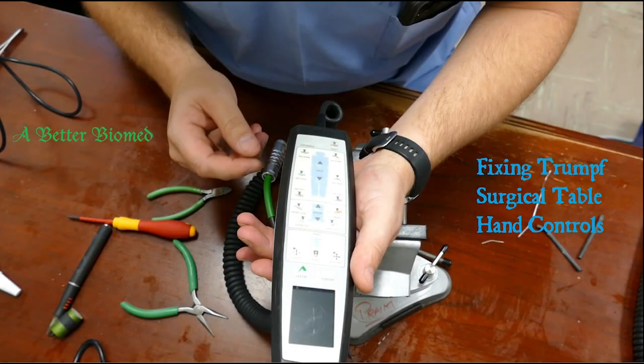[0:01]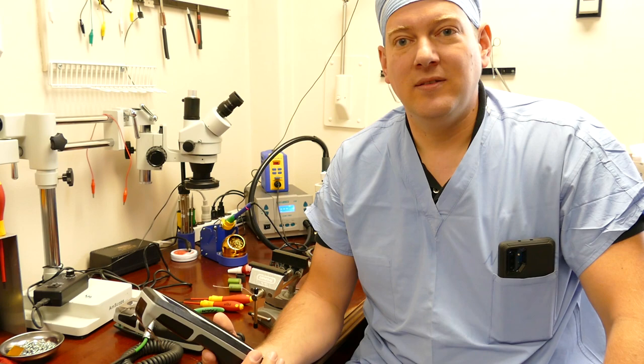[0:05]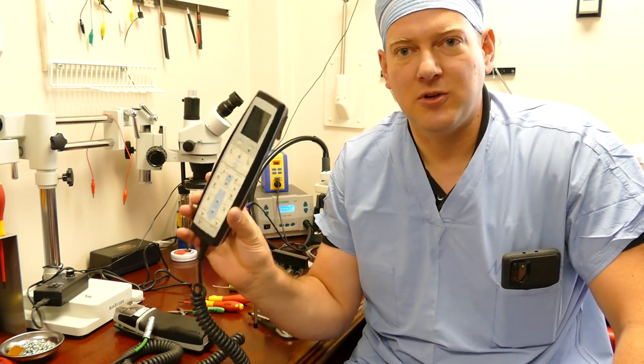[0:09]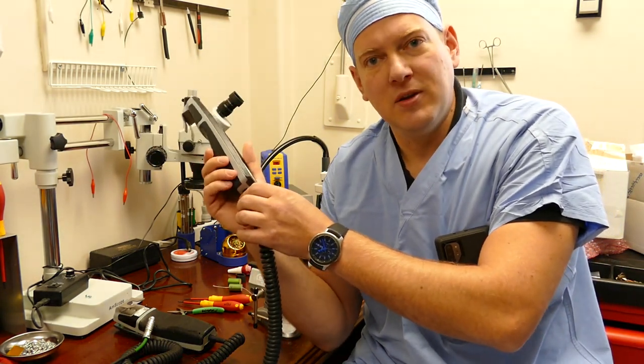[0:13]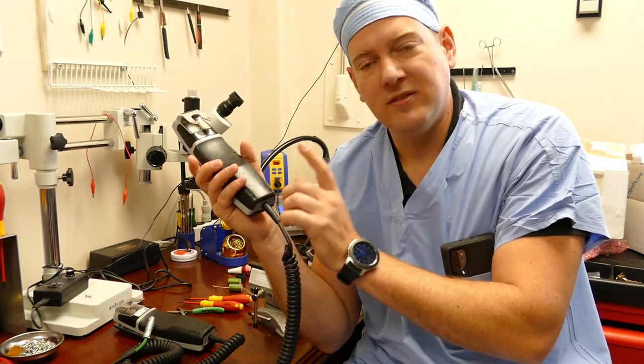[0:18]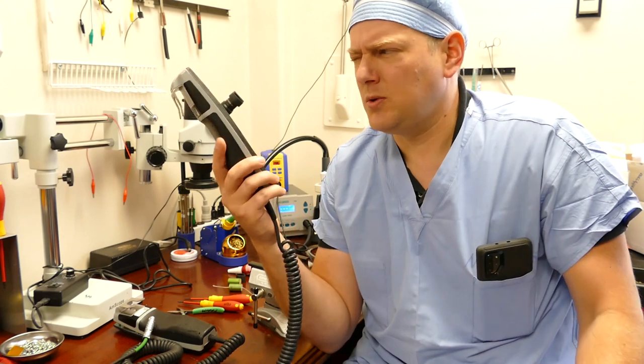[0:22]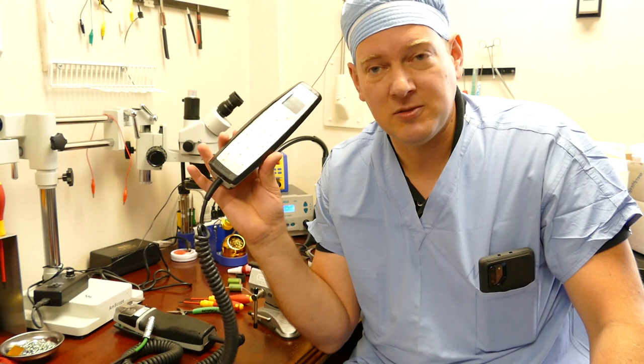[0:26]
Hi everyone, welcome back. Today I'd like to go over the repair of Trumpf hand pendant surgical table controls. The common problem with these controls is the cable down here at the bottom becomes loose and the cord will spin around, and that breaks some of the connections on the inside. It's a simple repair, and these hand controls, I believe, are just over $2,000 if you want to buy a replacement. So instead, we're going to repair them.
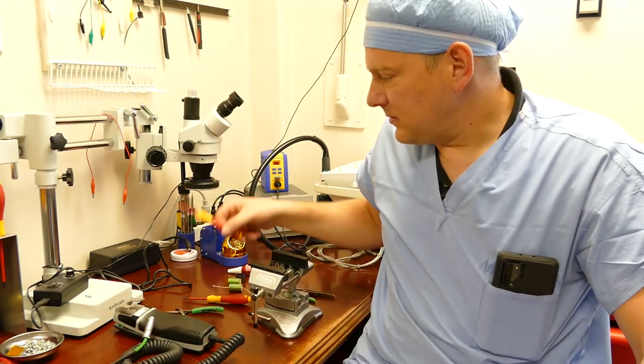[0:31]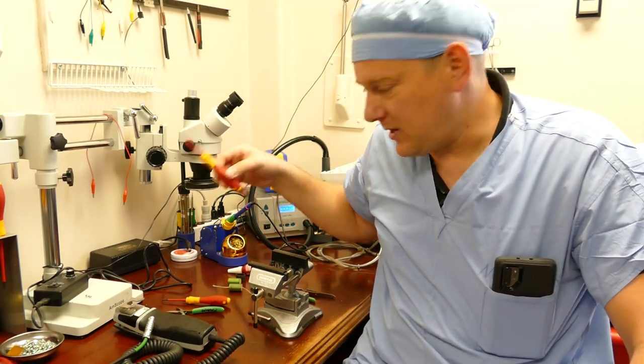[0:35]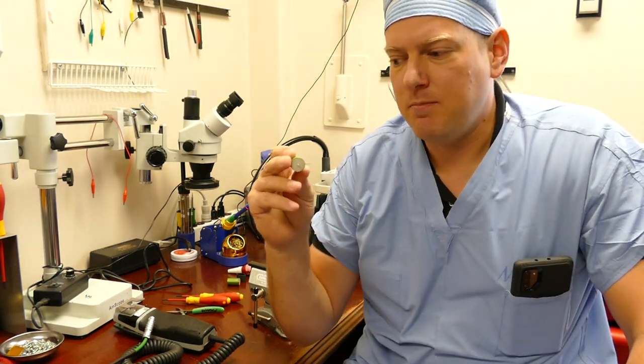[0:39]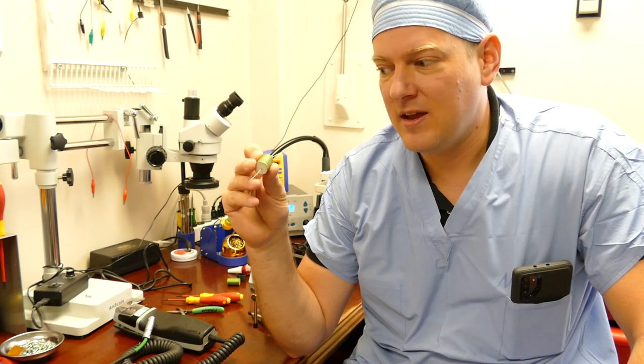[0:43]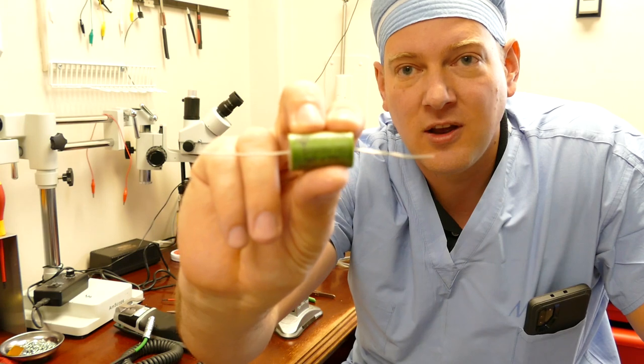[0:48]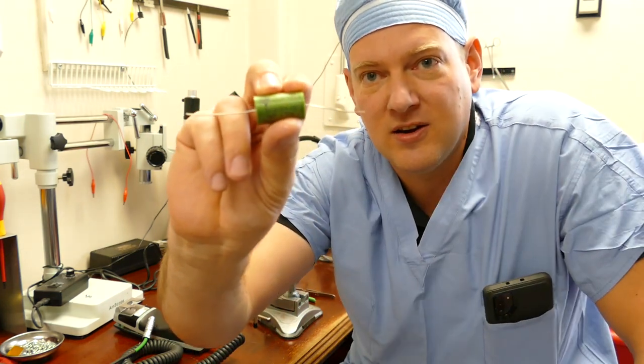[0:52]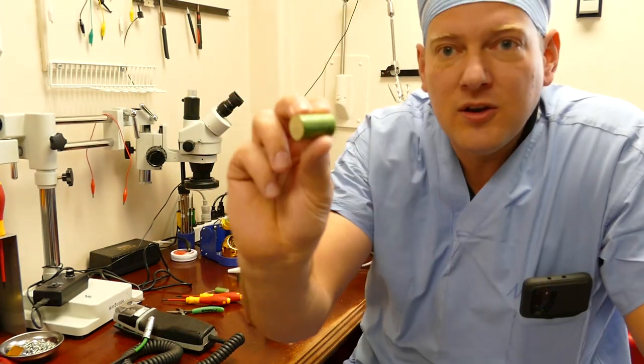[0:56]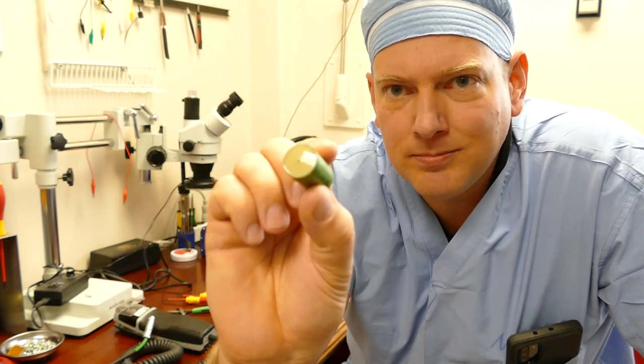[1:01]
What you'll need is a T8, a T10 Torx bit, and I've got Vishay MKP 1839-510-84HQ capacitors. This is what breaks on the inside. It'll shear off right here at the base of the capacitor. Here's one from a prior repair. You can see how it broke off flush.
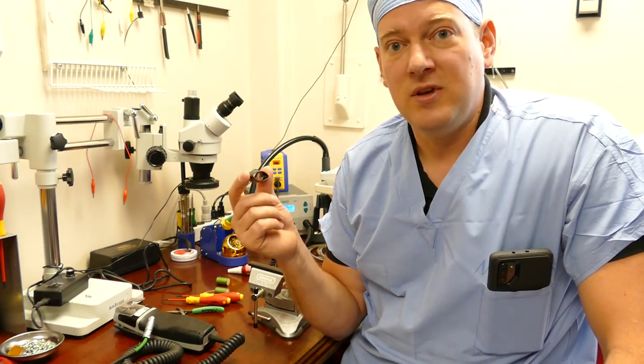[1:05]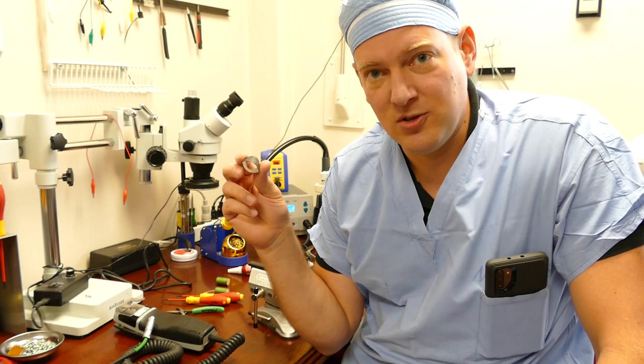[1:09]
You also need a piece of 3/4 inch shrink tube, and I'm using the dual layer shrink tube because it gives the capacitor a little extra cushion. This is installed over the capacitor body to give it a little bit of vibration dampening.
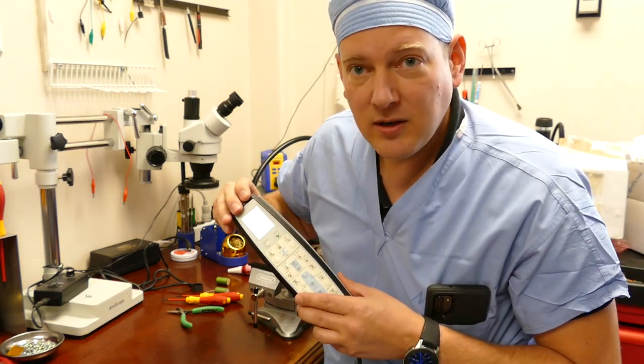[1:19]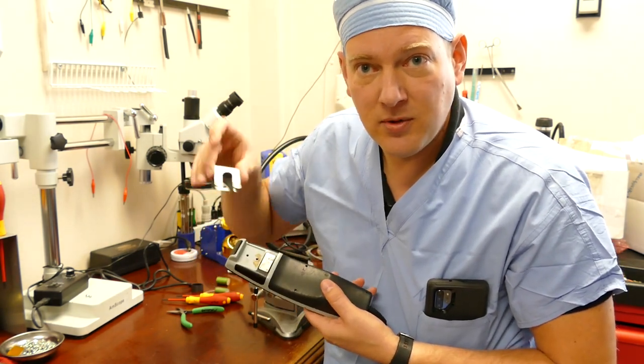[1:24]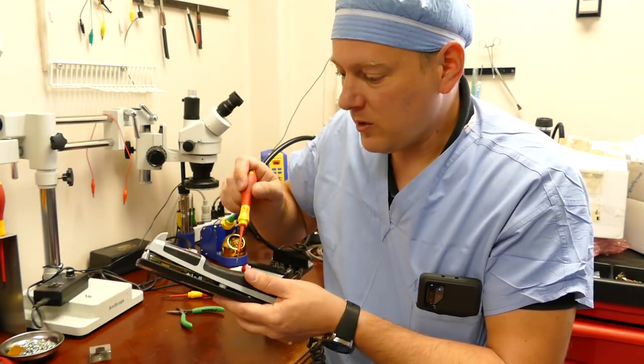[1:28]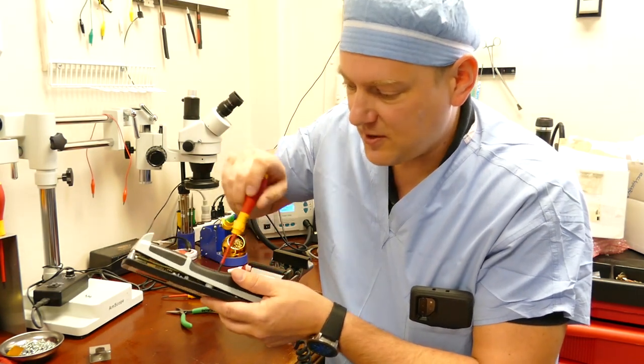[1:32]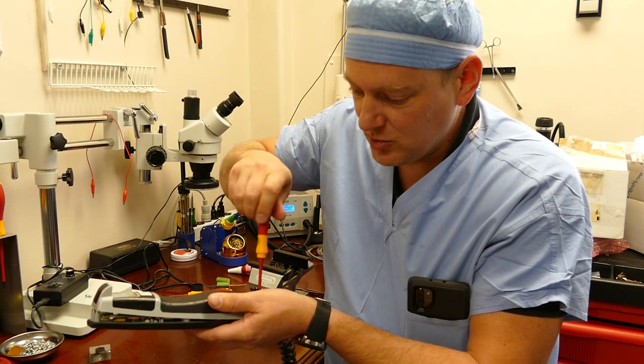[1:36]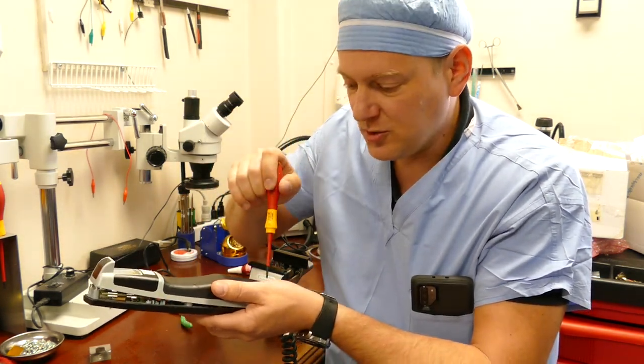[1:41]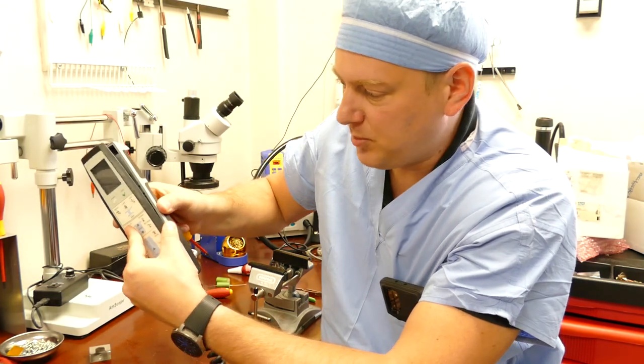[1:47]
To open the hand pendant, you're going to flip it over on its back, and there's going to be 2 screws that retain the clip. Once you've removed the clip, there's 4 T8 screws that are recessed underneath the rubber overmolding. You're going to shove the driver in, loosen them all up. Don't loosen one all the way up, just loosen them in sequence, just a little bit, and then make a round again and a round again. And this will gradually push the body apart as it separates.
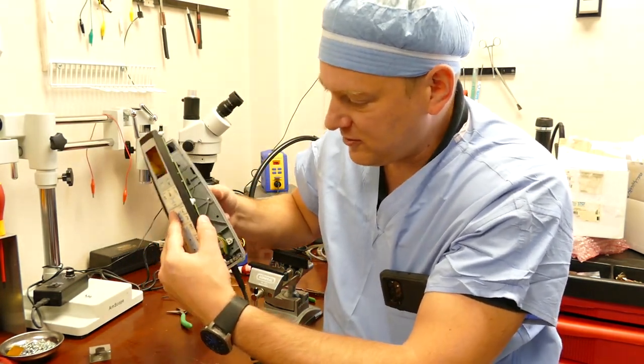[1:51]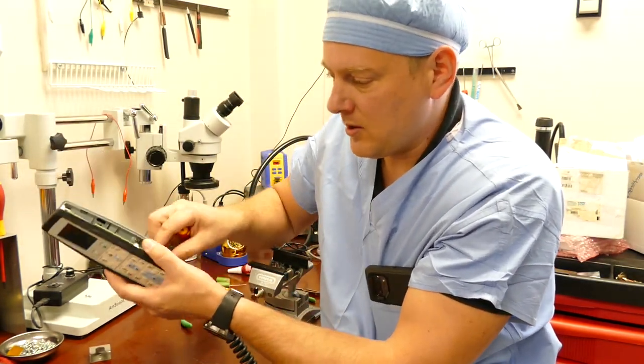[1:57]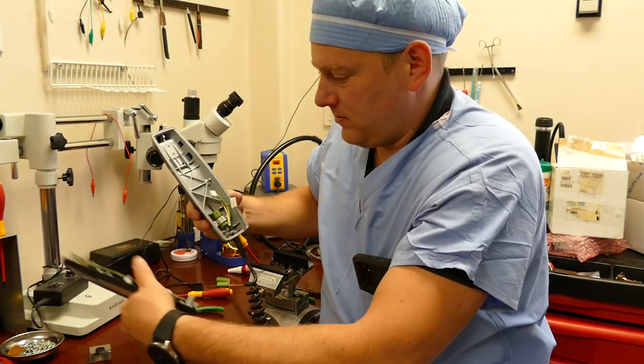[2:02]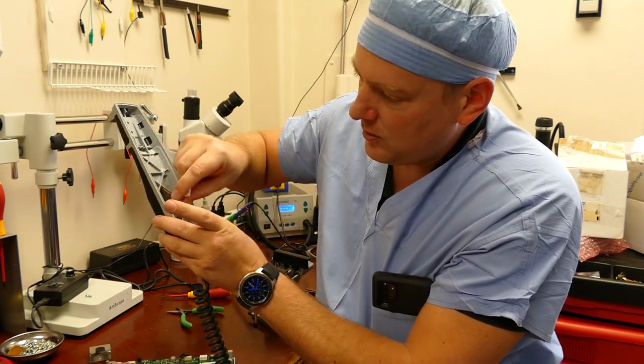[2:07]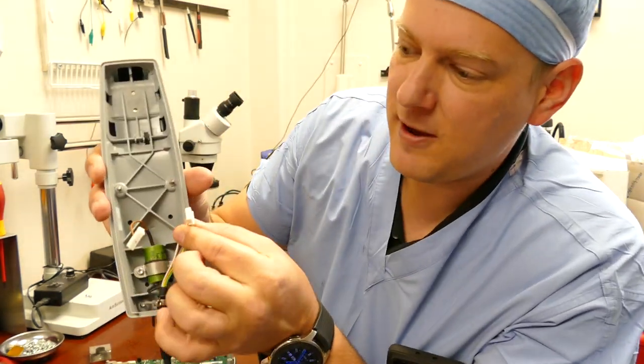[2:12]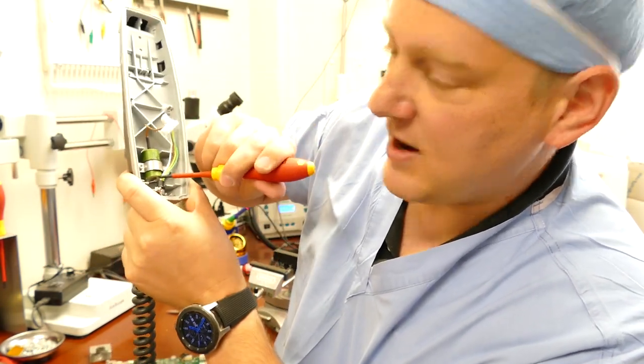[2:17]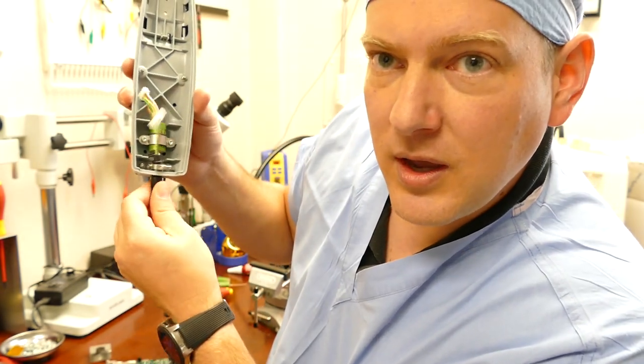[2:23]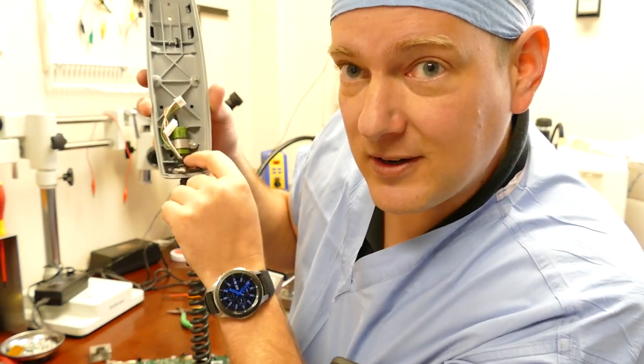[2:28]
Now be careful, there are 2 wires that connect the cord to the main circuit board. We're just gonna disconnect those right now. You can see the old capacitor with what is that, a 6-pin connector, and we have a 4-pin connector. Where it breaks is right here at the base of the capacitor. The cord comes in and it'll rotate around. Over time, it'll shear off right at the capacitor.
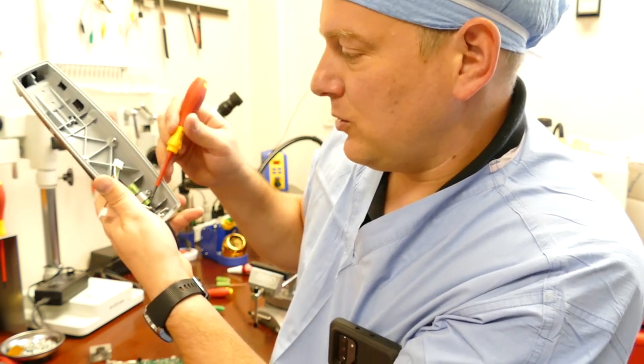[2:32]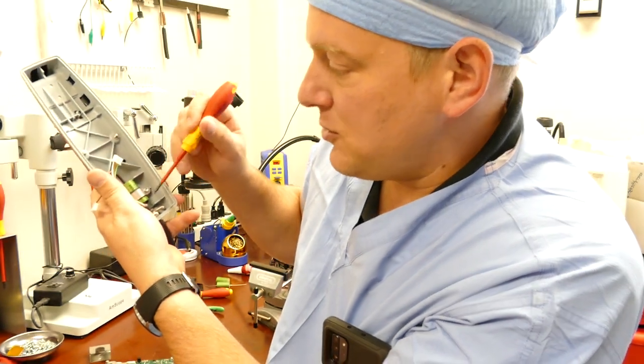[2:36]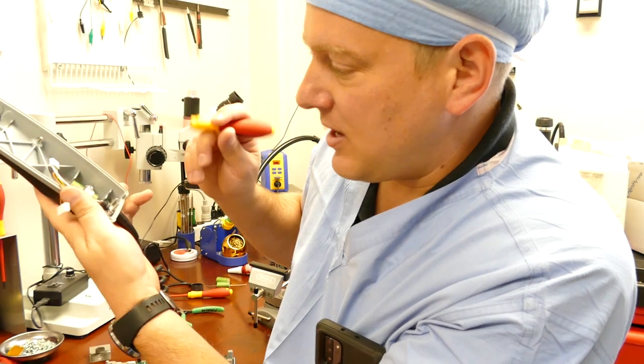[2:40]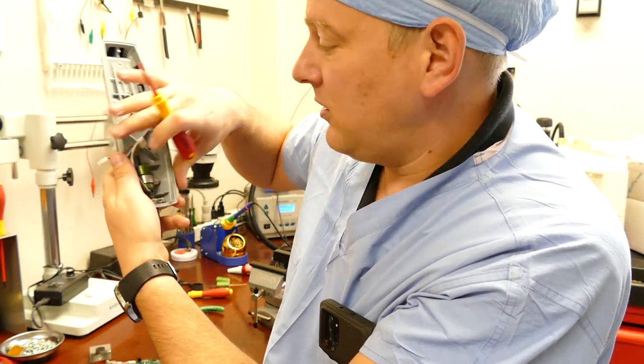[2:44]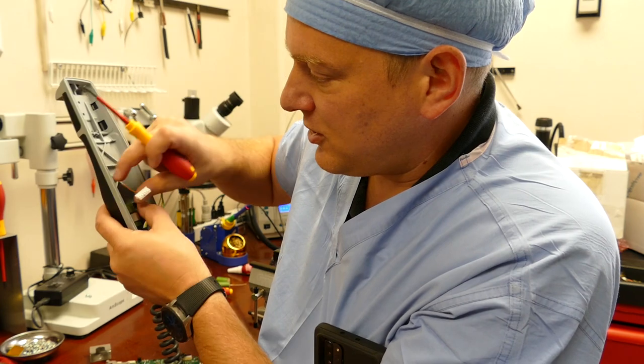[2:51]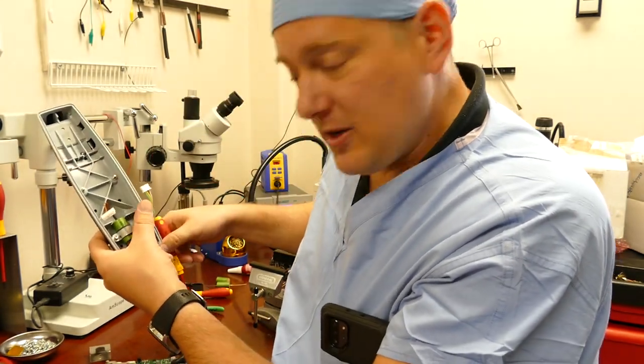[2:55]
So what we're gonna do is we're going to solder in a new capacitor, and then we're going to gap it a little more correctly. And once that's done, then we'll retension the cord retainer and make sure that it's positioned correctly so that it won't spin around anymore. On the other side of the capacitor, there's 1 wire that's going to be soldered that runs to the large connector, and that is it. That's the first step.
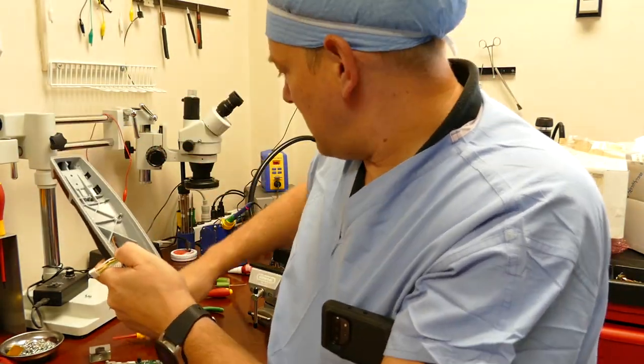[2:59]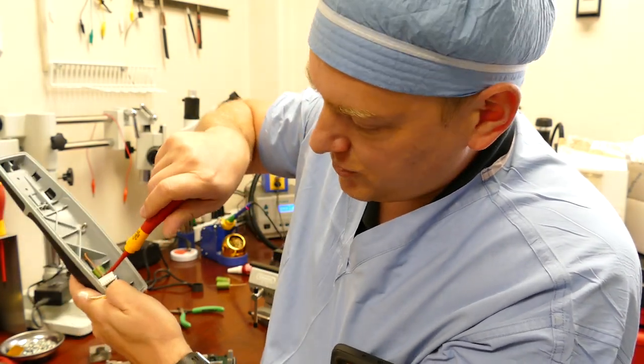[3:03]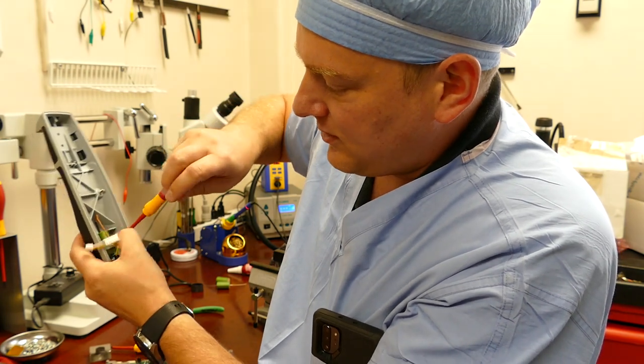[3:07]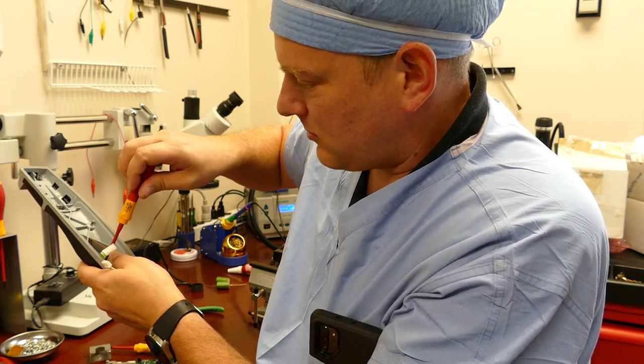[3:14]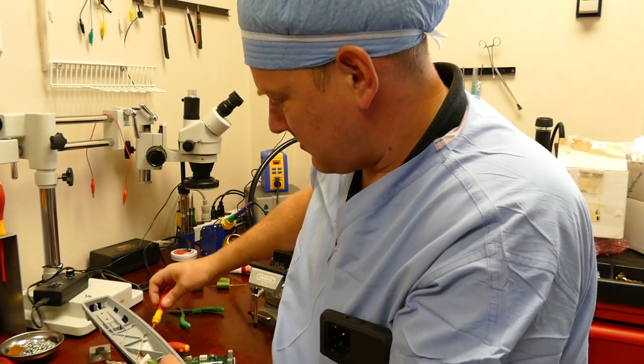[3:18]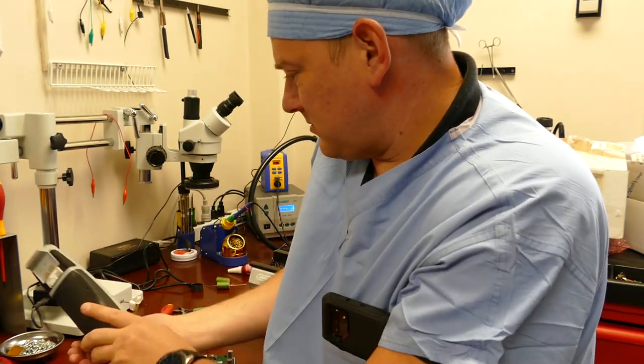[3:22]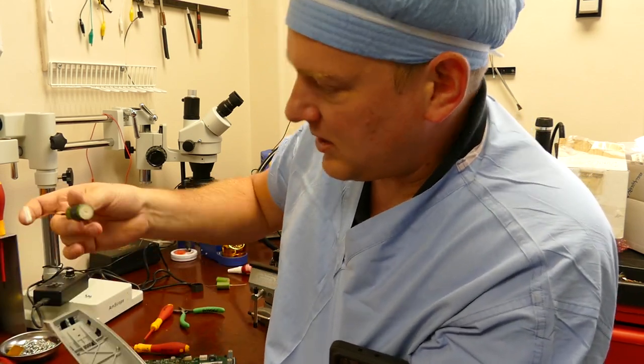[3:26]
Second step, take your T10, you're going to loosen up the screws that are holding the hold down strap on your capacitor. Set that off to the side. And here you can see the capacitor just popped right off.
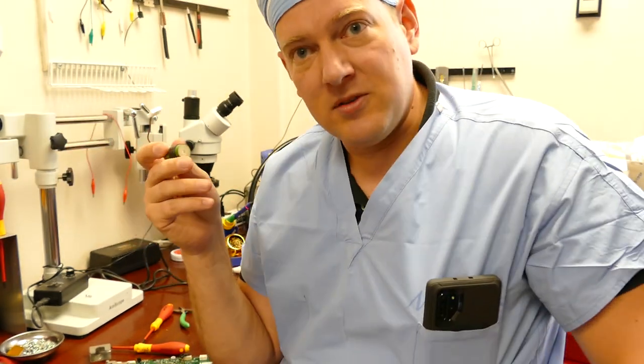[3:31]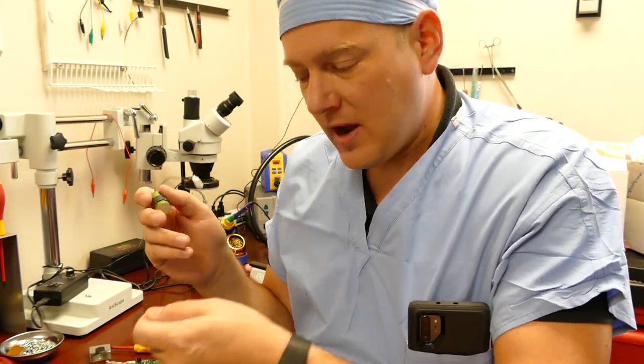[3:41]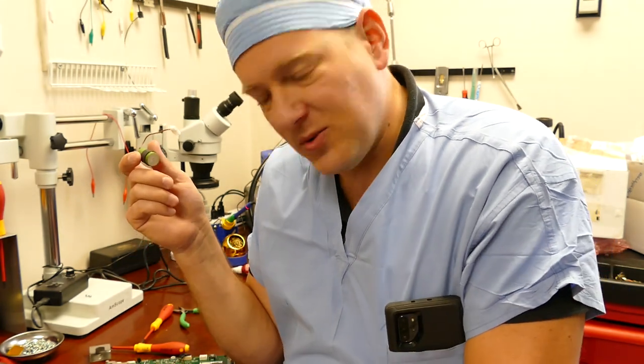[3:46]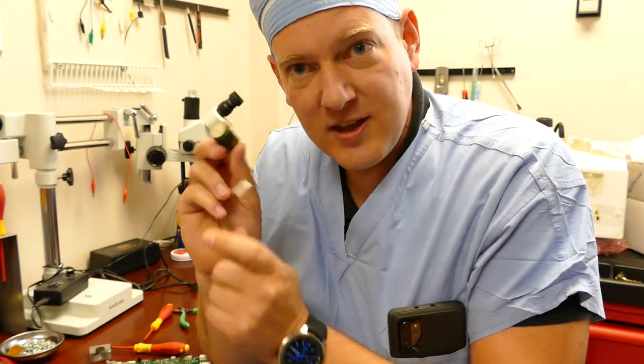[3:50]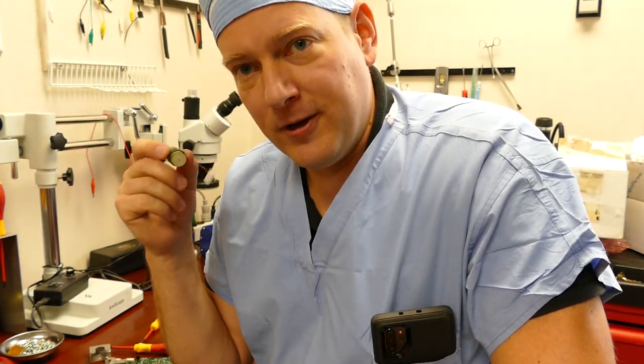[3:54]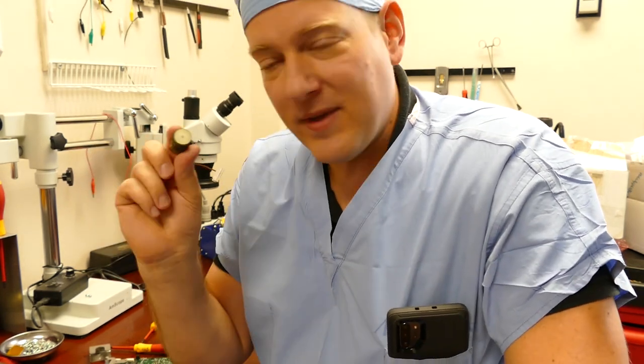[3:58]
Now the symptom is going to be an intermittent failure on this hand pendant. Sometimes when you plug it into the table, it'll work, and then say you'll plug it into another table and it won't work. But that's because every time you unplug it and you plug it, you're repositioning the cord and it's twisting and turning just a little bit to make contact with this little nub that's remaining on the back of the capacitor. So as soon as you get a failure on one of these hand pendants, open it up and take a look. I guarantee it's gonna be one of these little guys that's broke.
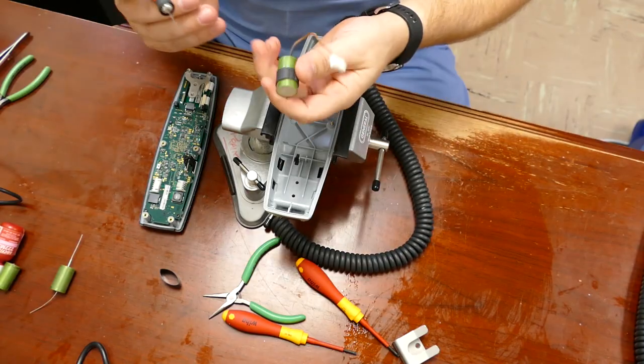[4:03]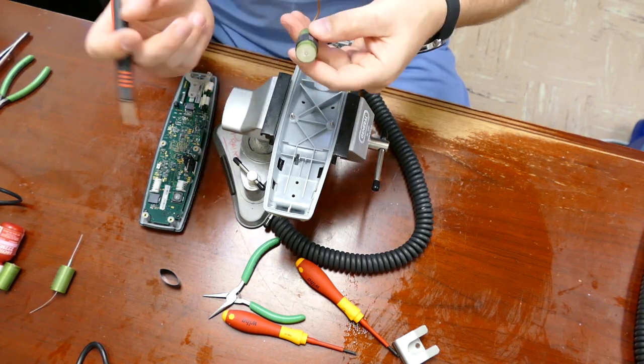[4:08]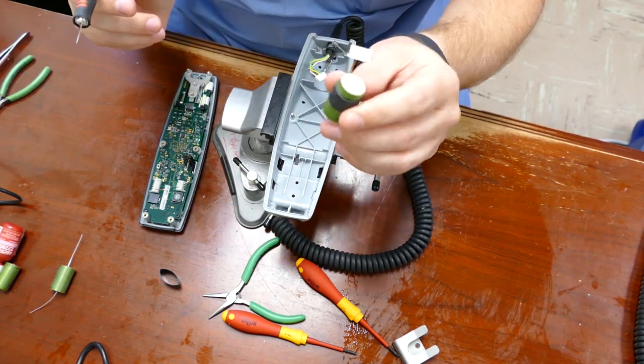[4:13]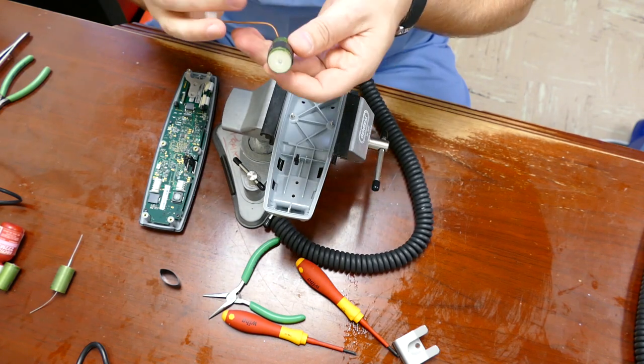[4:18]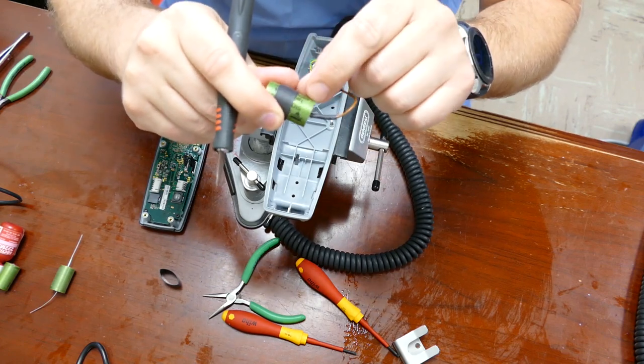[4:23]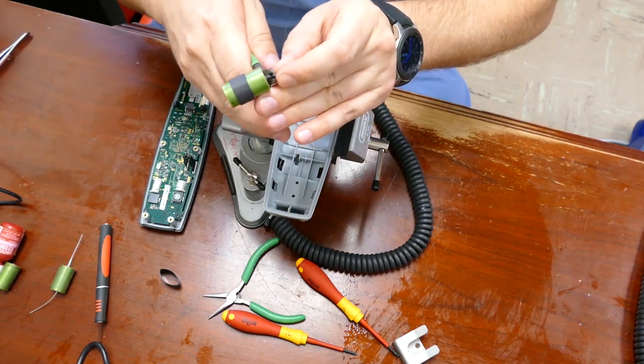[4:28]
The first step is gonna be to remove the capacitor either by desoldering whatever's left or clipping it out and starting anew. You can see that there's a shrink tube that's on the outer edges of the capacitor. If you want to see the part number, just cut it off and you can see a little bit of the print right there, but none of that's important. I'm just going to go ahead and clip it. Clip it. And strip it back. You don't have to strip it too much.
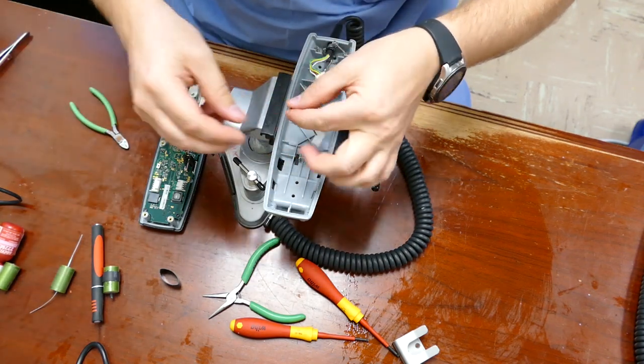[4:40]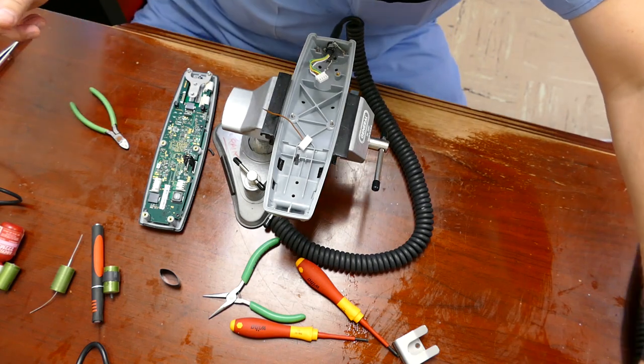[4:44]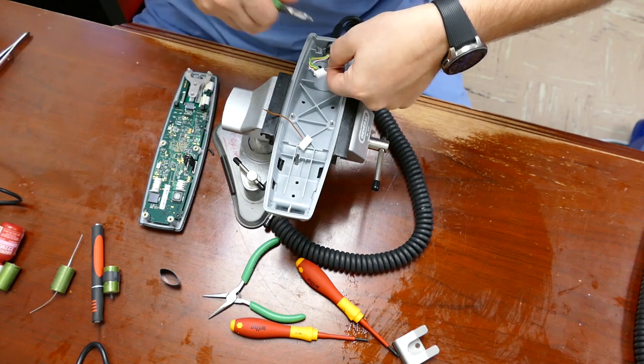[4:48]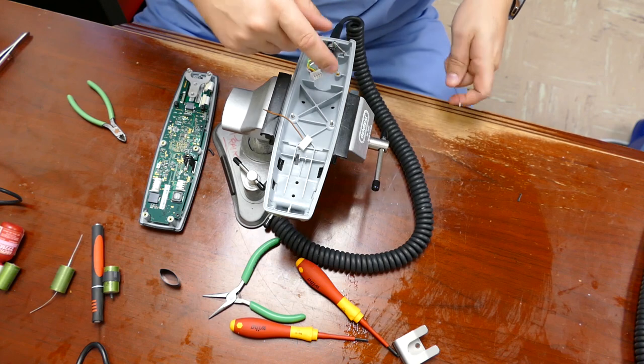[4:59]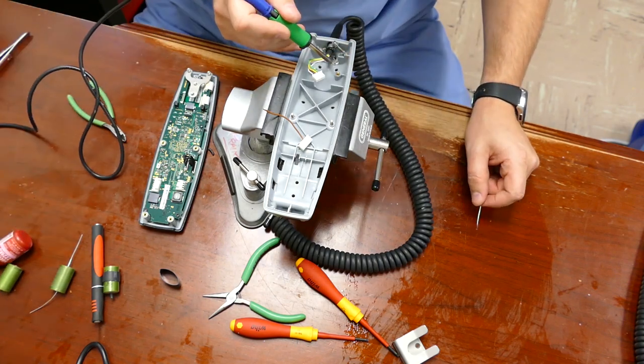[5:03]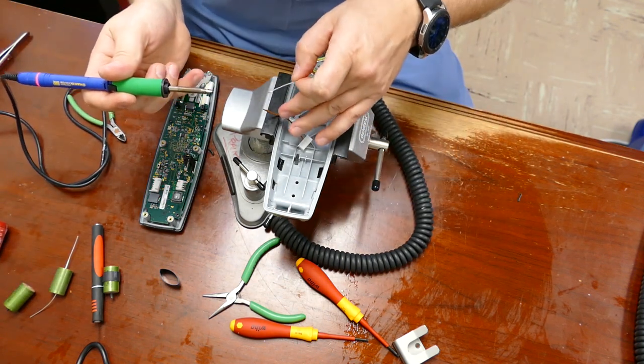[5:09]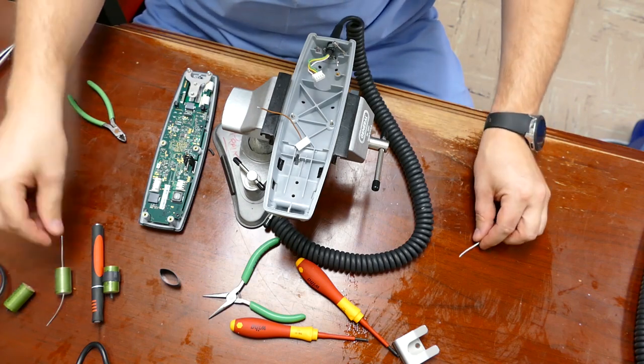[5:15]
Okay, you can see a flexible remnant down here in the body. This flexible line is going to attach to the other end of the capacitor, and it's usually going to be bent pretty abruptly, so you're going to have to remove the old solder off it. I'll just do that with the solder gun real quick. And I'm going to apply solder to the one wire that comes out the other side of the capacitor. Just tin it up.
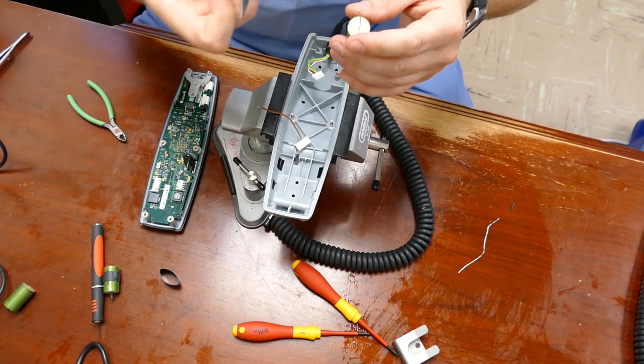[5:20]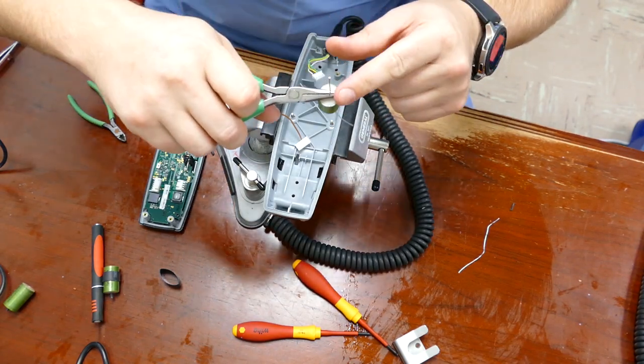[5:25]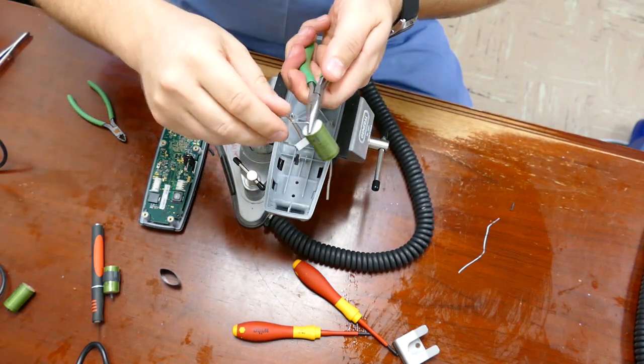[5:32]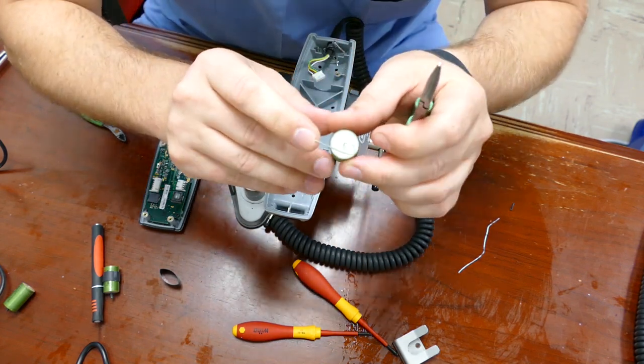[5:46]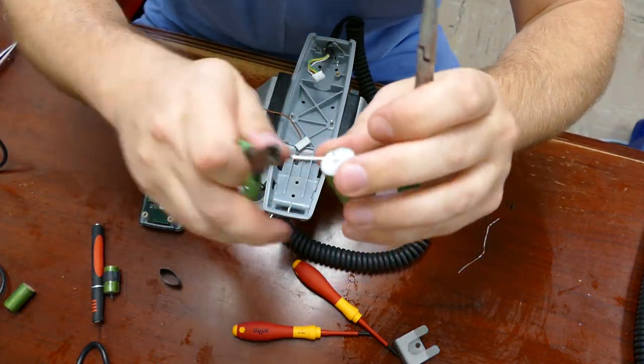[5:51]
For one side of the capacitor that faces the bottom, what I'm going to do is I'm going to place my pliers on the base and give it a little bit of a space, and I'm going to bend the wire over. While I'm holding on to it, I'm going to give it a little bit of a curl to add a little bit of vibration dampening in case this ever happens again where it comes loose. And I created just a little bit of a curl there, and then I'm going to cut it off.
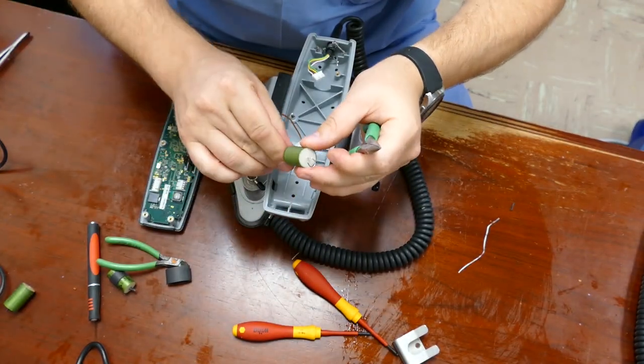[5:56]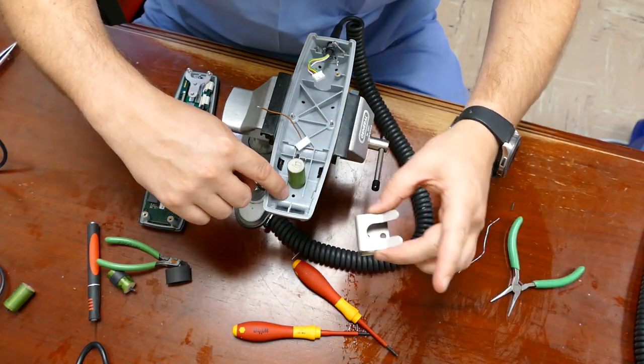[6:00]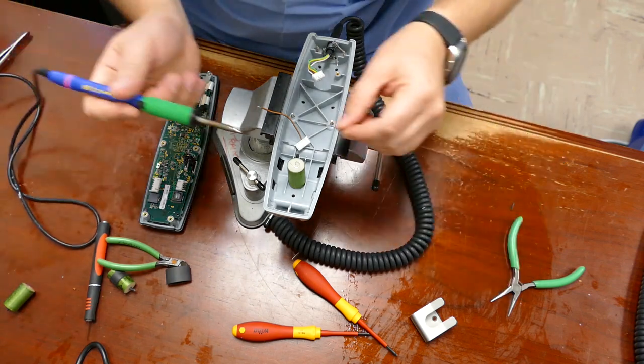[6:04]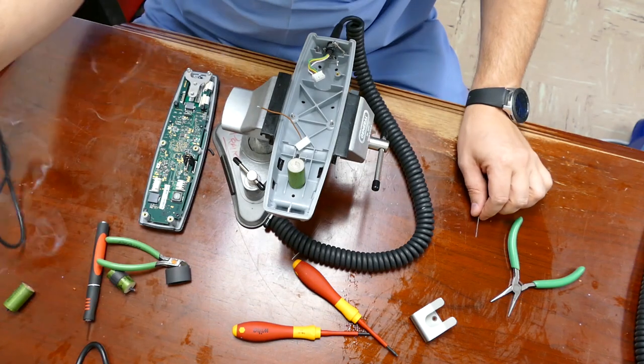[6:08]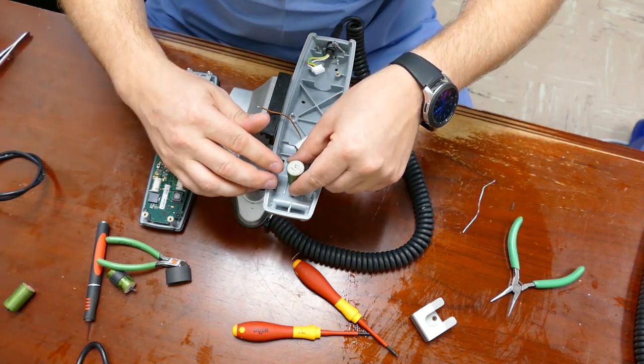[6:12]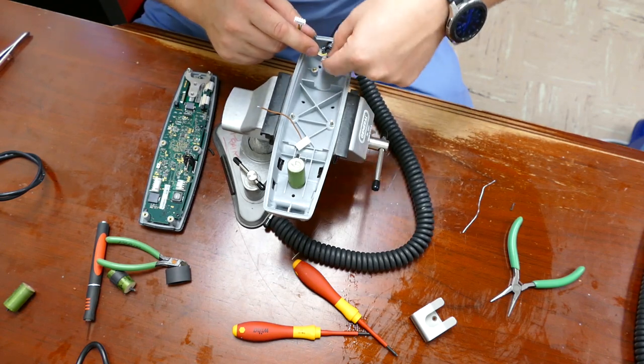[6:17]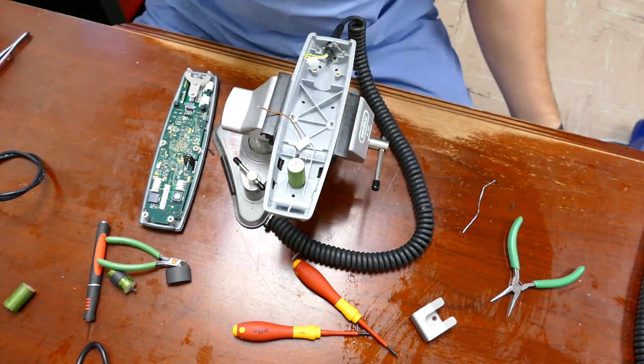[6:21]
I'm going to use the holes where the clip used to go through, and I'm going to use that to hold my capacitor while I tin it. There we go. Now that side that has the curlicue, that's going to connect to this wire that's really soft and bendable. It's down here. But first, I'm going to give it a little bit of heat shrink tube.
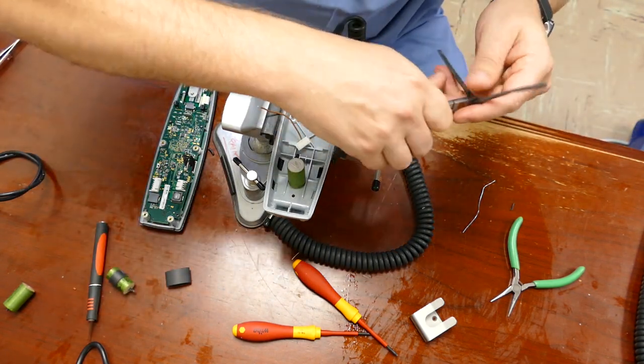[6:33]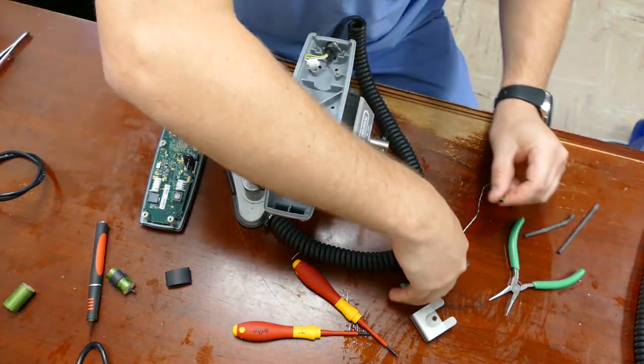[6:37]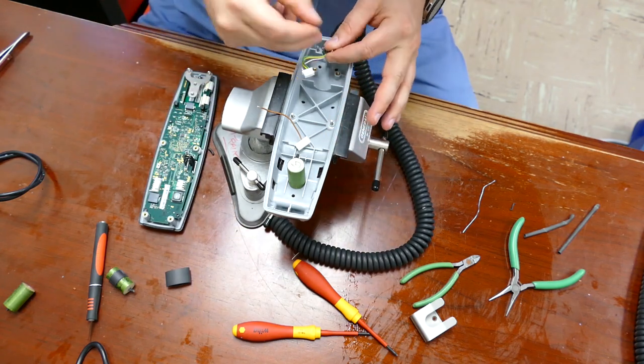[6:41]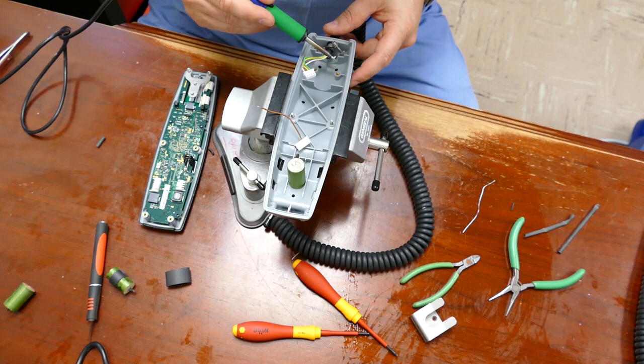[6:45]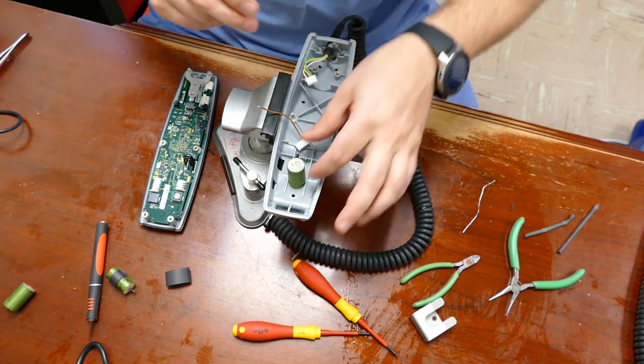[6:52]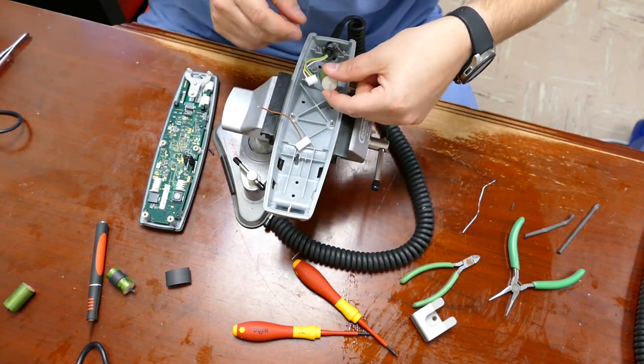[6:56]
So I think I'm going to use some 3/16 heat shrink. Flip off just enough. I'm going to put that over the flexible wire, just like that. Take the capacitor. I'm going to hold it with one hand while I solder it with the other.
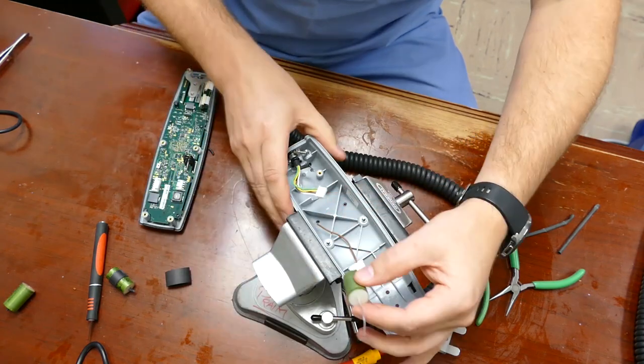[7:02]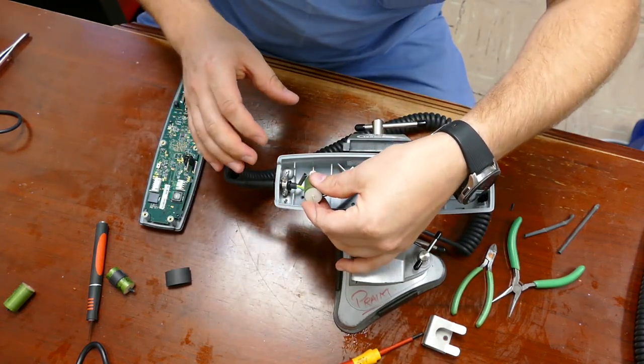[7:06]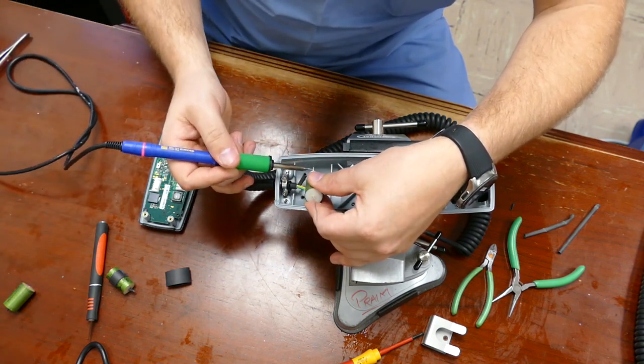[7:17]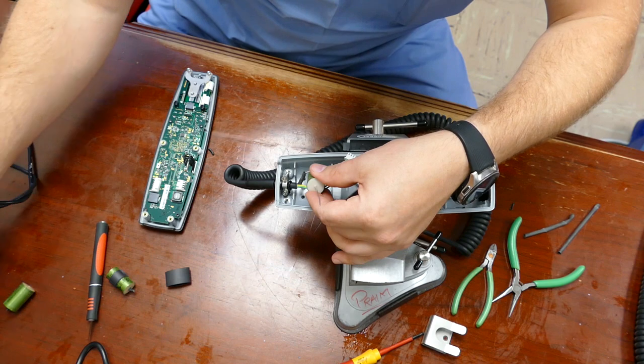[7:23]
Let's see if I can get that better in frame. So I'm going to make sure that the curlicue exit of the capacitor is directly in line with the wire. And now I'm going to solder them together. Just like that.
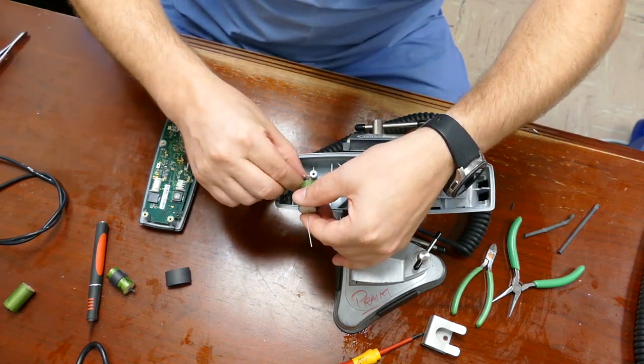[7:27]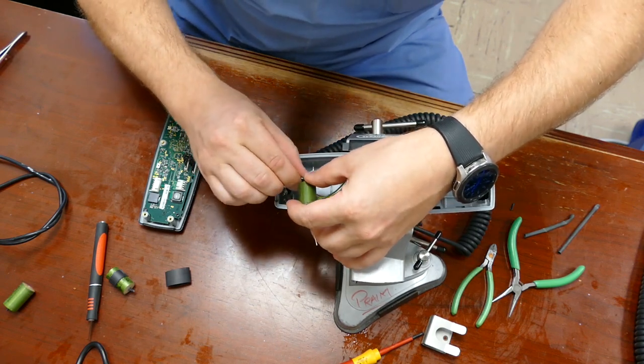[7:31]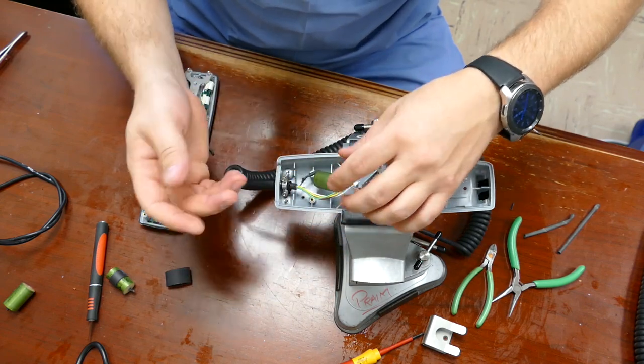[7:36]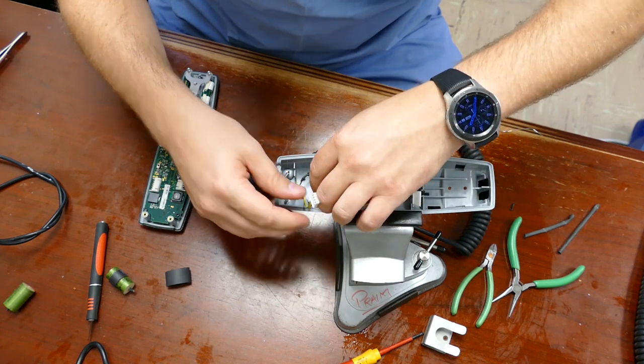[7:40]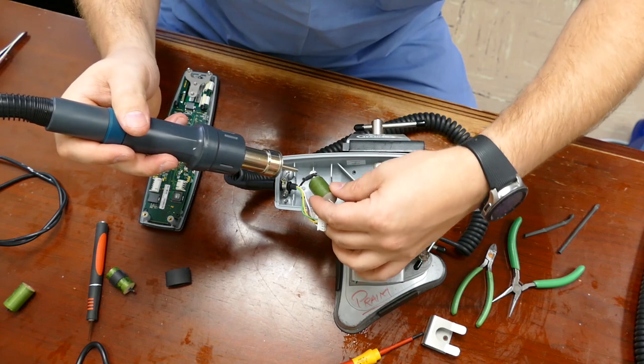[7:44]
Okay, and then I'm going to move the heat shrink tube up and over the area that I just soldered. Not like it really matters, but I do it for a little bit of fit and finish. And I've got my heat gun set at 200 degrees. Shrink it down real quick.
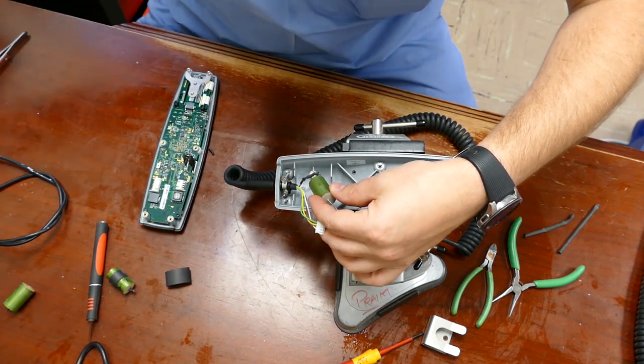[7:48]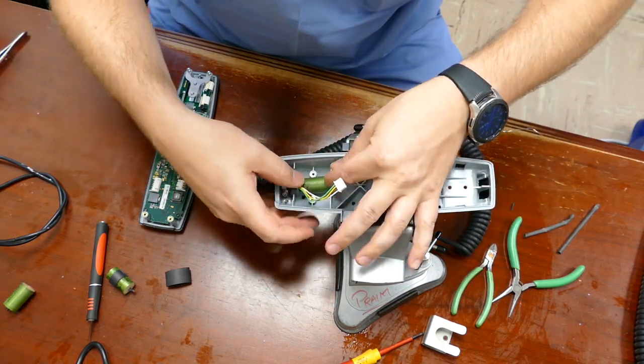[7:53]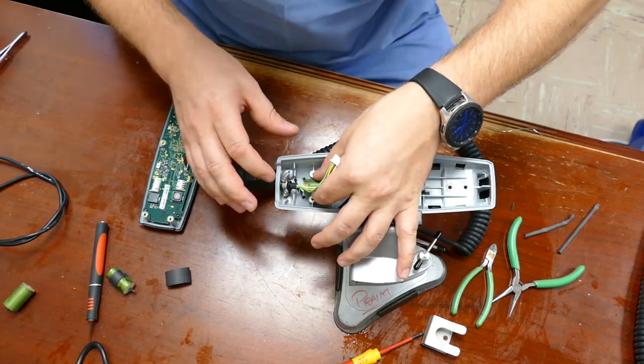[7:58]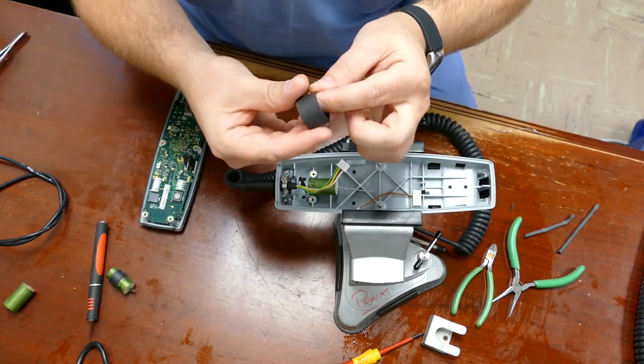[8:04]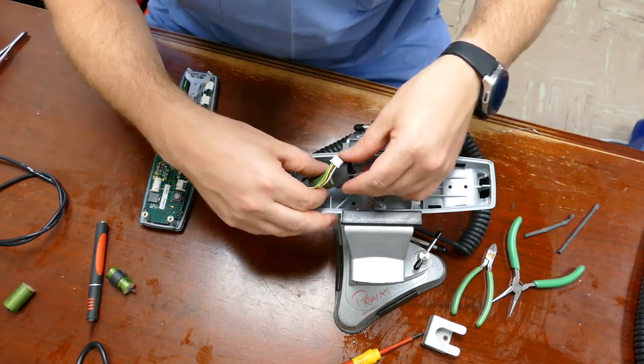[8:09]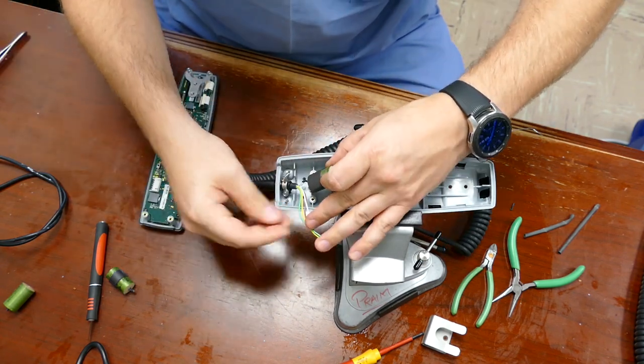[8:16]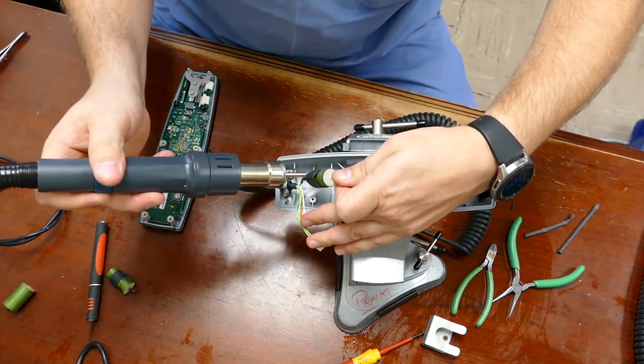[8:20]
Now, we're ready to seat that capacitor down in there. Take a look at how it's going to bend that wire. Looks pretty good. Just like that, all right. I'm going to take the 3/4 inch piece of heat shrink tube and fit that over the body of the capacitor. I'm going to put it as far down to the bottom as I can, and then use my air gun to shrink it down.
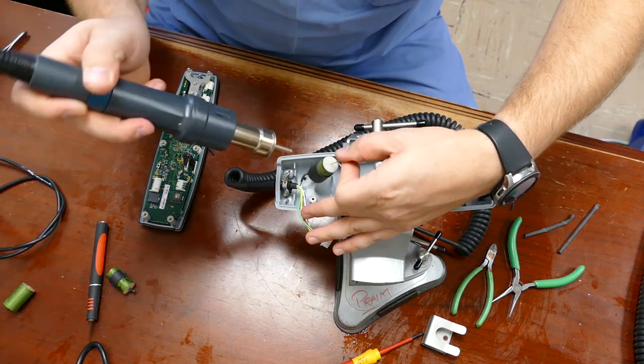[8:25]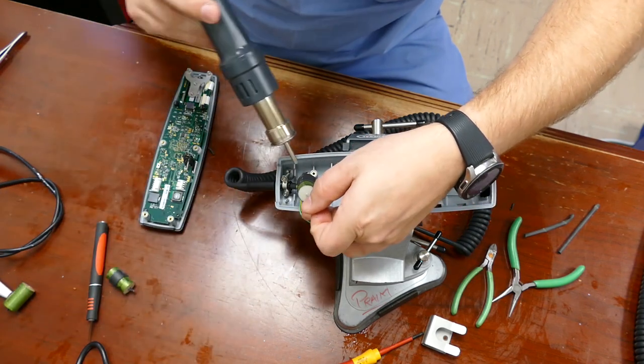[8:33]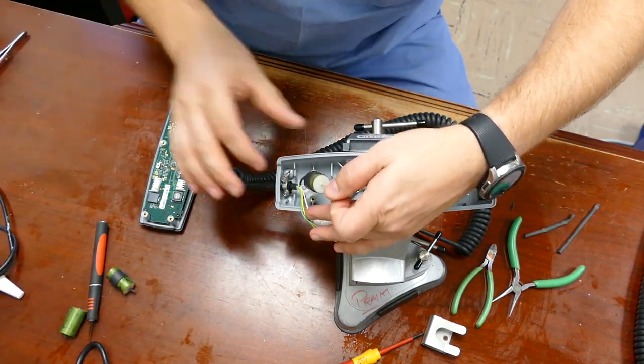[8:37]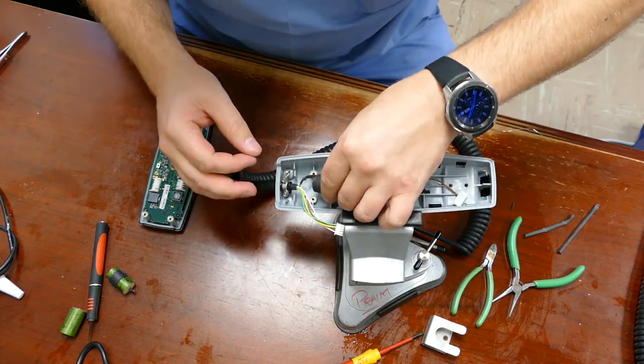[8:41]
Now this could go faster if I were to turn up the temperature, but I'm trying to keep the temperatures as low as possible for these components because I don't want to damage them by heating them up too much. Just enough to shrink the shrink tube down, just like that. Keep it in place. All right, now I'm going to twist the capacitor, seat it down where it's going to sit normally.
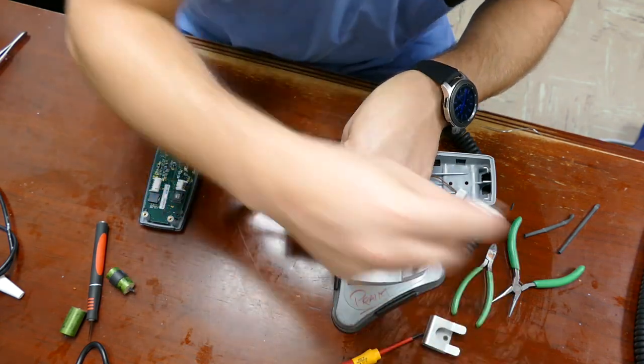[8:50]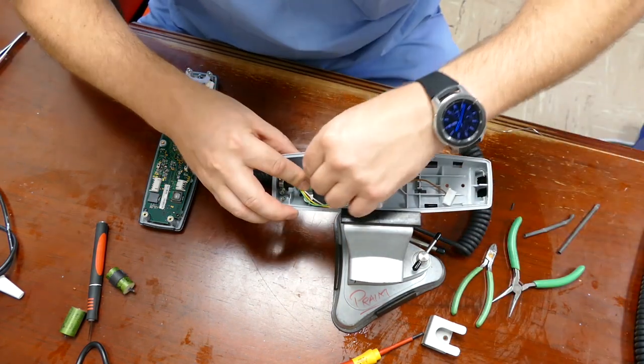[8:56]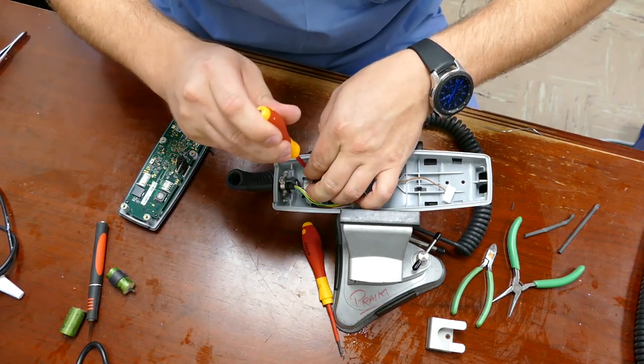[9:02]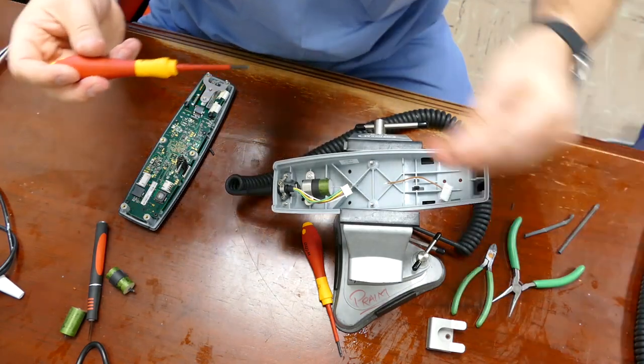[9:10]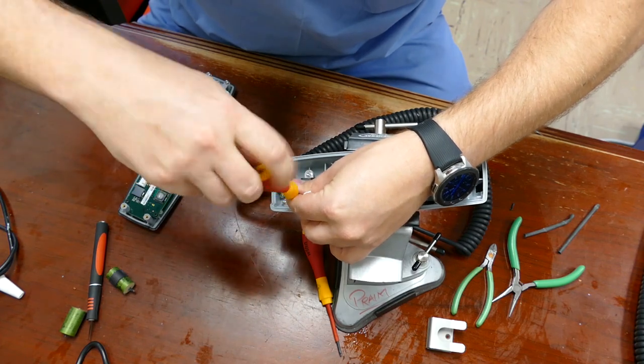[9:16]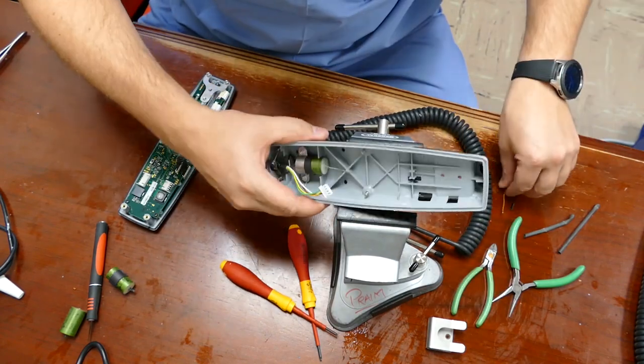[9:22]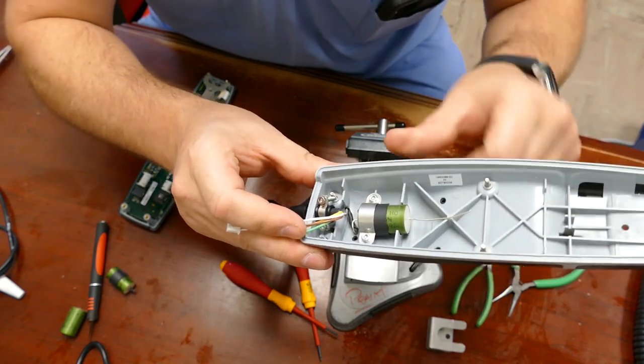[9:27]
Put the retention strap back on, along with the two hold down screws, which go to the T10. And tighten down all the way, not too much to crack the plastic. I hope you guys can see how that wire just kind of flexes and sits down in there.
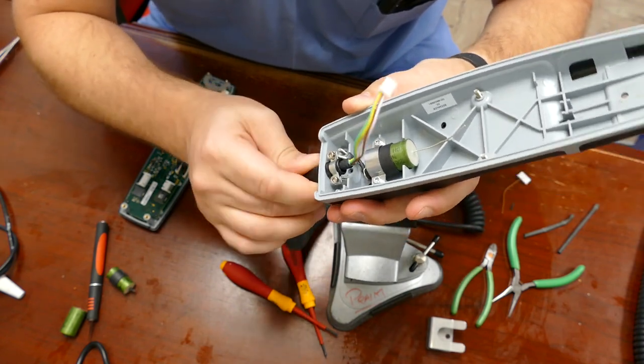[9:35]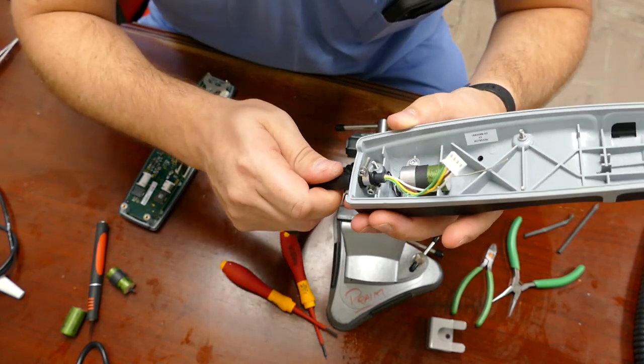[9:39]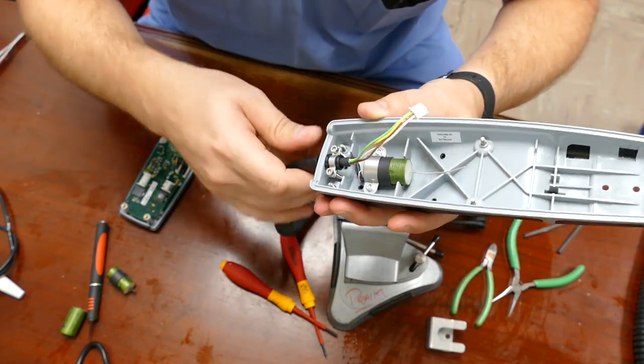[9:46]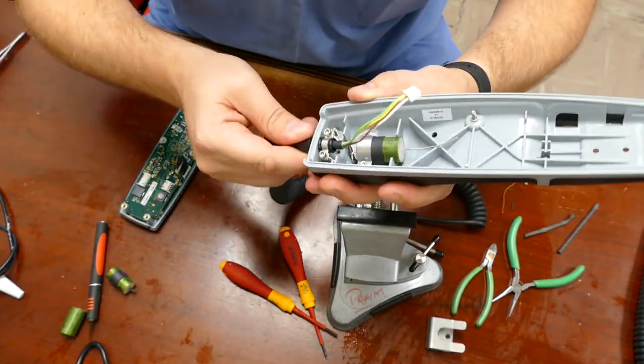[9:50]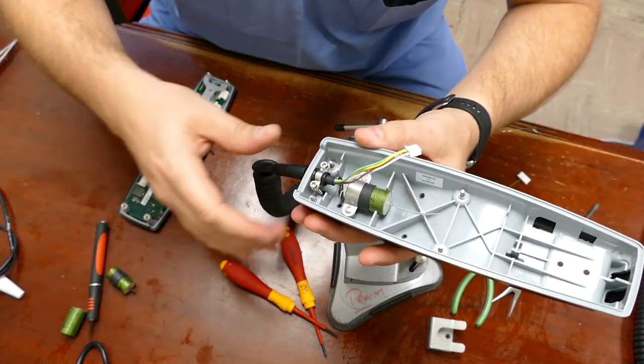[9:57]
So this is designed to move around a little bit, but when this clamp comes loose because of yanking or because of age, it allows that cable to spin completely around, and it normally will break at the capacitor because they didn't add enough of a loop to give it a little bit of stress reduction. So that's why I created that curlicue, and it allows it all to move quite a bit more.
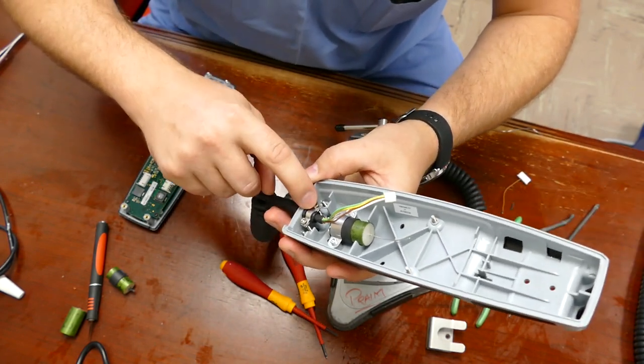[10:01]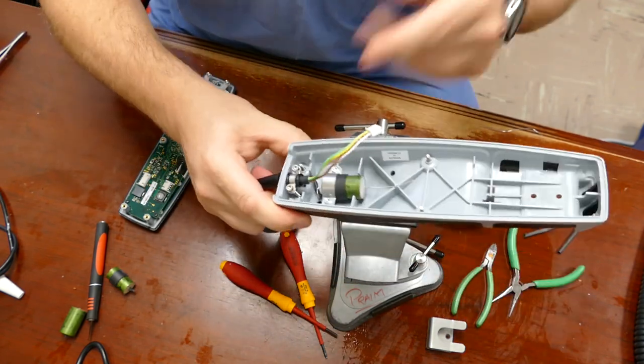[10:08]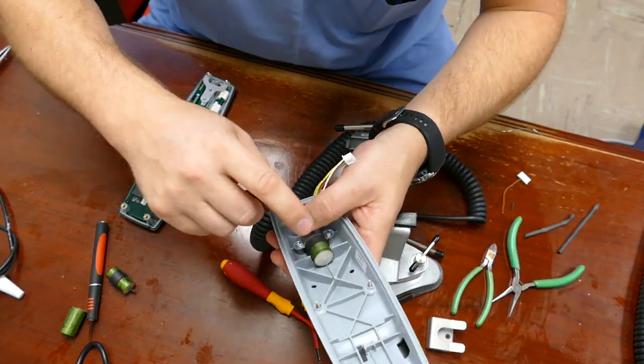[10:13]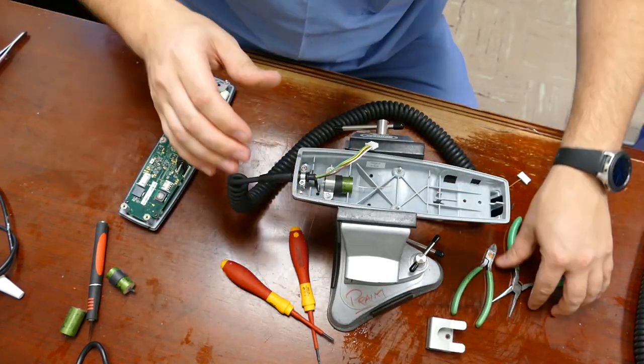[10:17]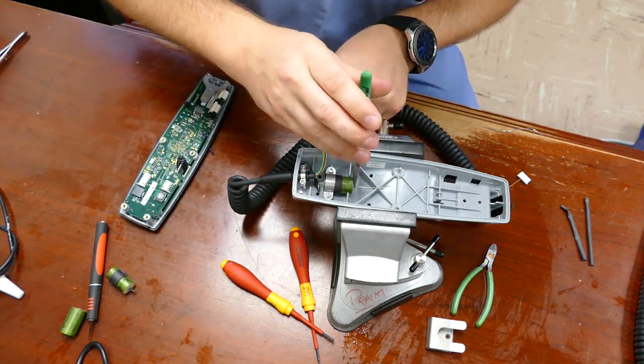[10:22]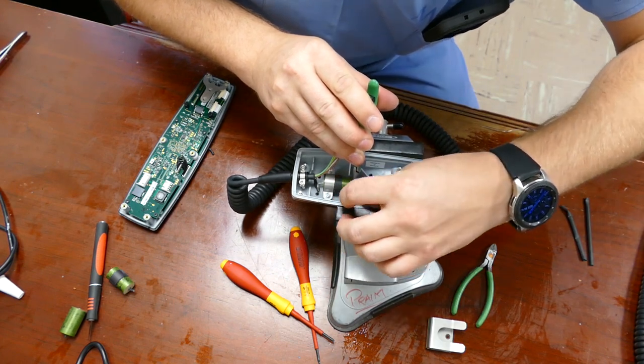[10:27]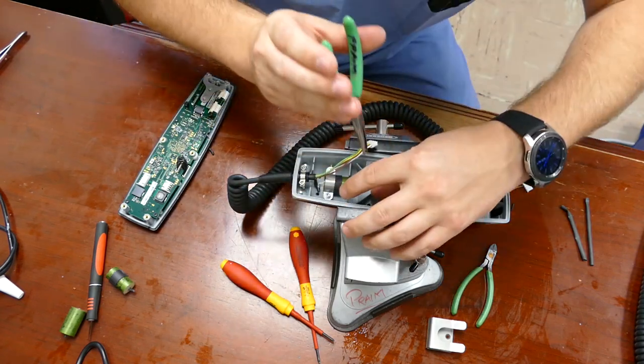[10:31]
Right before we clamshell this guy back up, we're going to retension this cord retainer right here and make sure that it's as tight as possible in both that direction and that direction. So next, we're going to turn our attention to the other side of the capacitor. Same thing I did before. We're going to take a needle nose, stick them at the base of the capacitor, and then bend the wire over to the right, just a little bit.
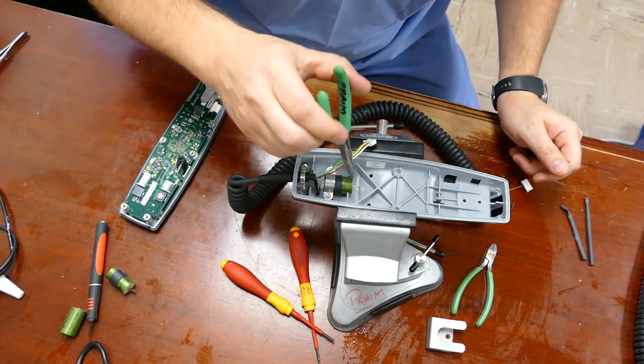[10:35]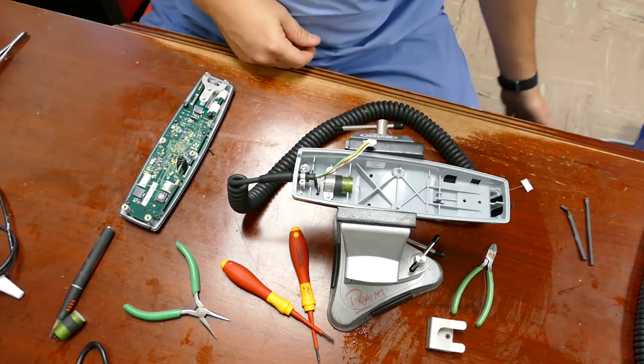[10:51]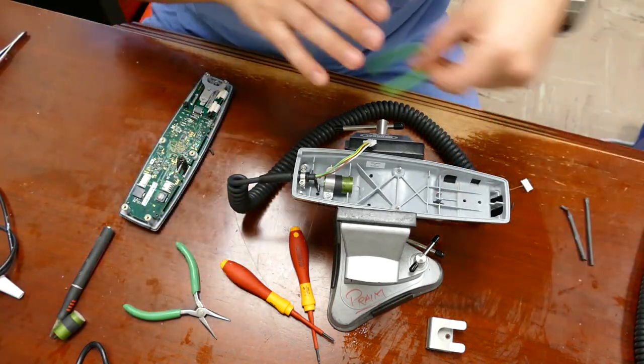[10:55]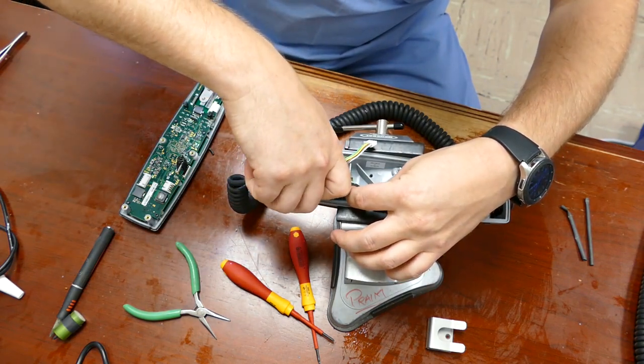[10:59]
Now the reason that we use the needle nose at the base of the capacitor is because you don't want that weak point, which is the exit of the capacitor, to be where it bends. You want it to bend out a little bit. That way there, it doesn't stress it and eventually break like it did with these guys. So now I'm going to clip it off at about a quarter of an inch.
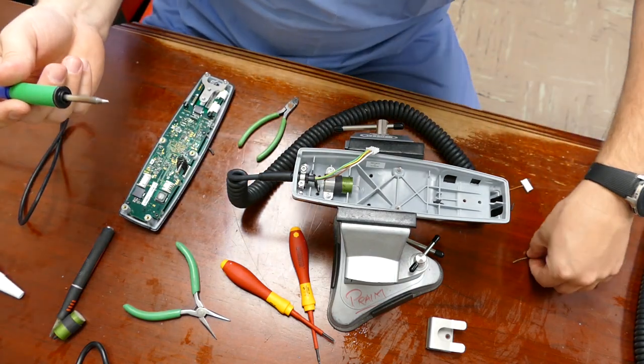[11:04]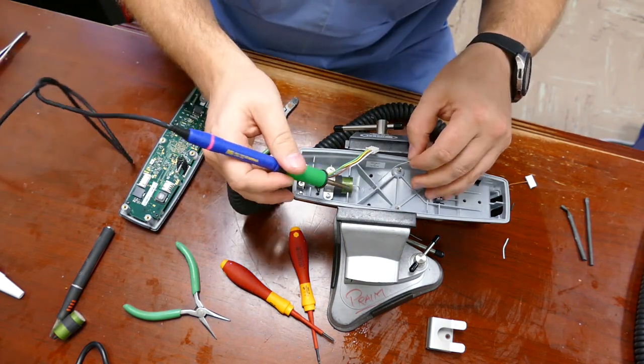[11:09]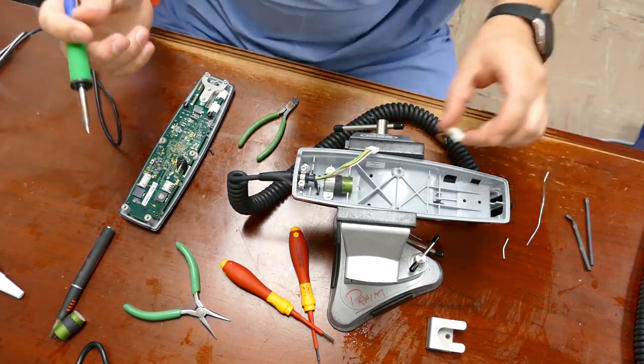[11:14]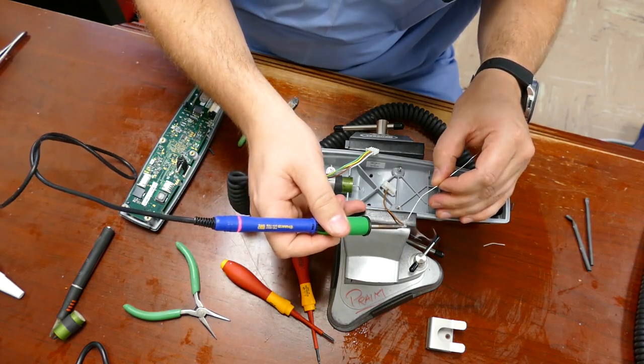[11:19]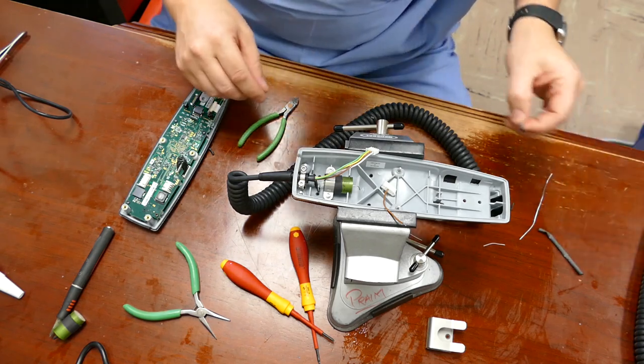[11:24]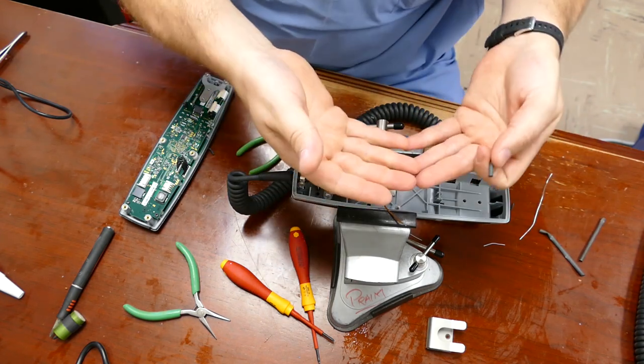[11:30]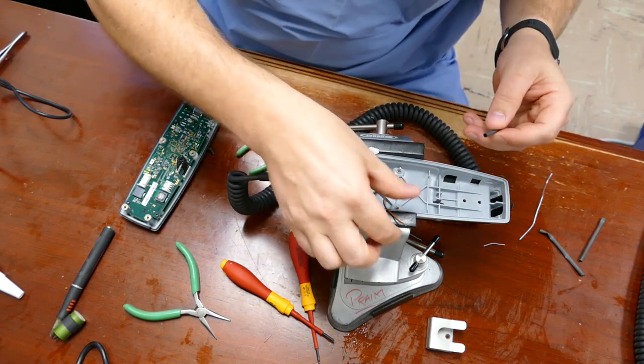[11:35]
I'm going to tin it with just a little bit of solder right at the tip. Okay, we're going to re-tin it right at the tip. There we go. Here's my new wire. I'm going to make sure that it's tinned properly down at the end. There we go. And it needs a little piece of shrink tube to cover the joint, because this guy's floating around underneath the circuit board. It's not being retained to the back casting, so we're going to have to use shrink tube on this guy.
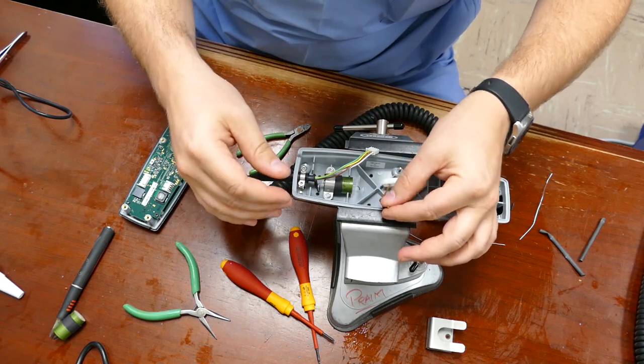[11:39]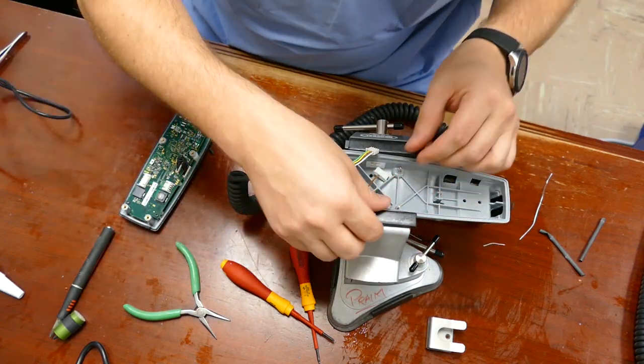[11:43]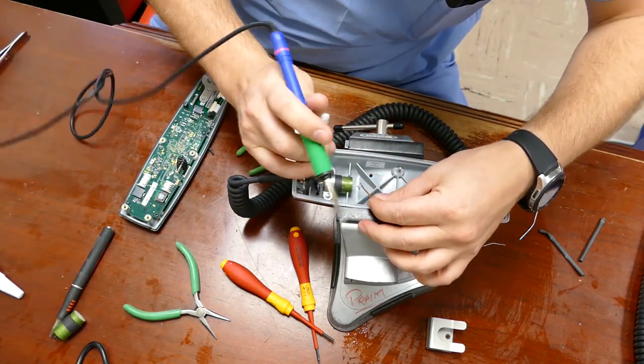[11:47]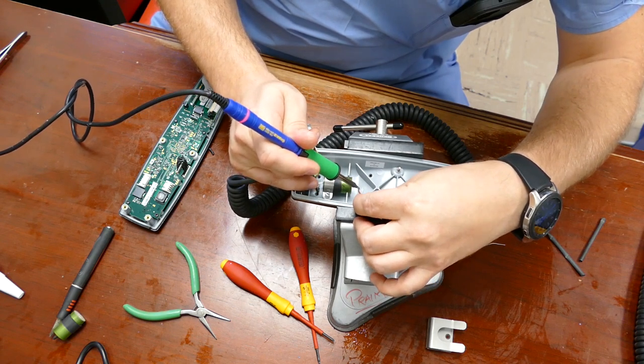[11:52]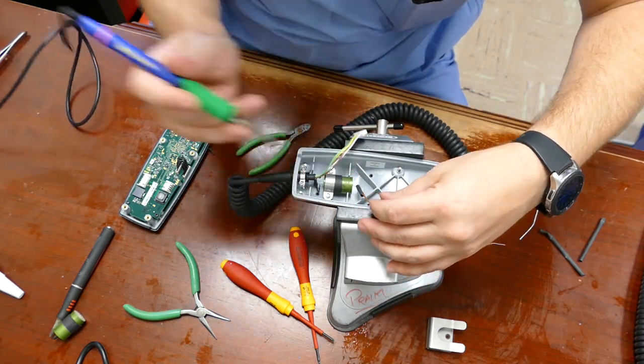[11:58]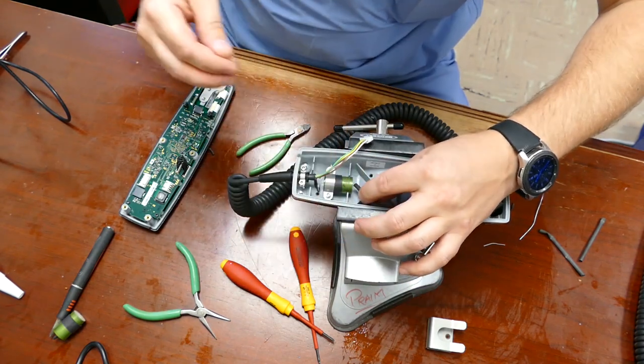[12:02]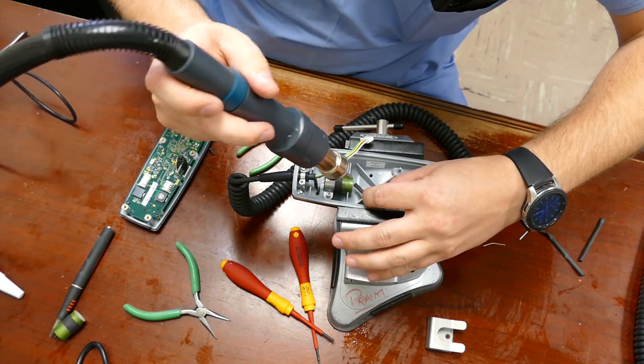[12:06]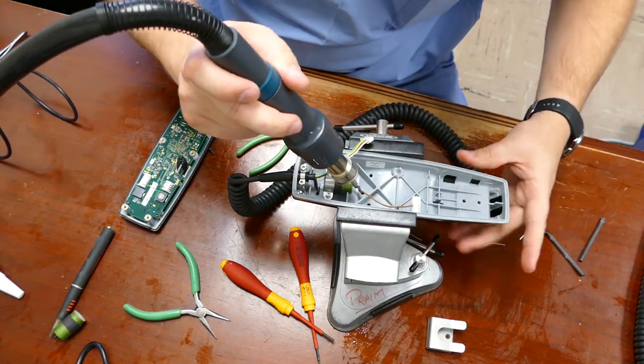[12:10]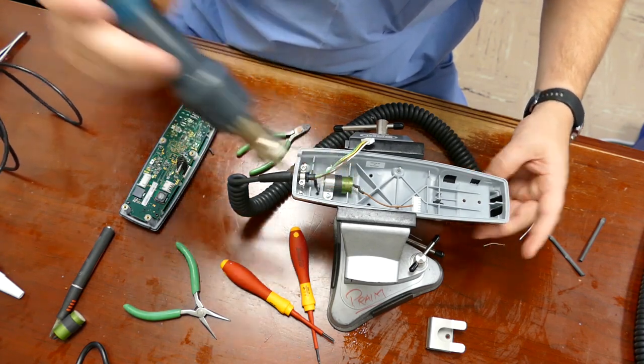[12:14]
Okay. Next, I'm going to solder these two together in line. Excellent. Put the shrink tube all the way down as far as you can go. Then we're going to push it down just slightly while we heat it up. There we go. Creates a nice little bend. There it is.
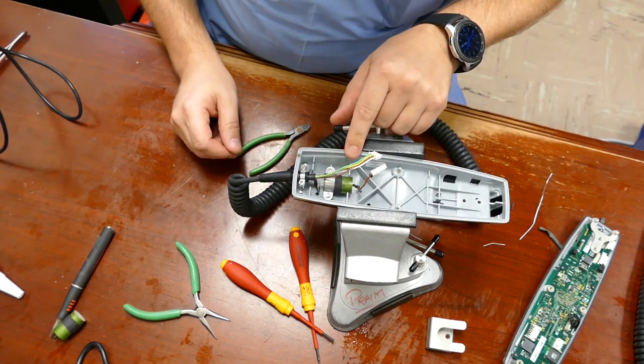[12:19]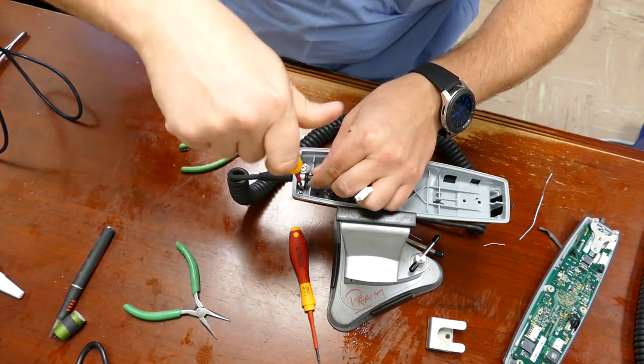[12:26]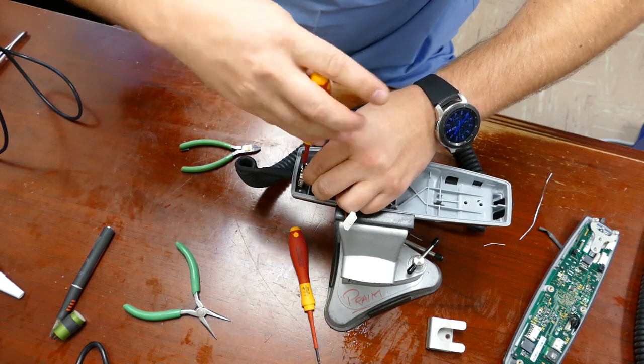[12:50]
Okay, now that the capacitor is done, we're going to retension the cable here and make sure that it's set up properly so that this doesn't happen again. I'm going to take the T10 bit, loosen up that clamp. We're going to shove the cord in as far as it'll go. And we want to make sure that both those screws are facing perfectly down. And then tighten it all the way back down. As tight as you can go.
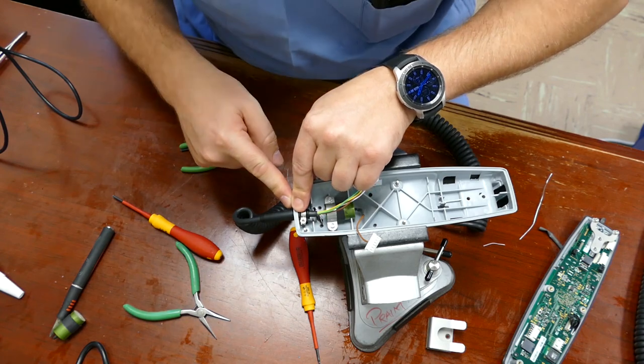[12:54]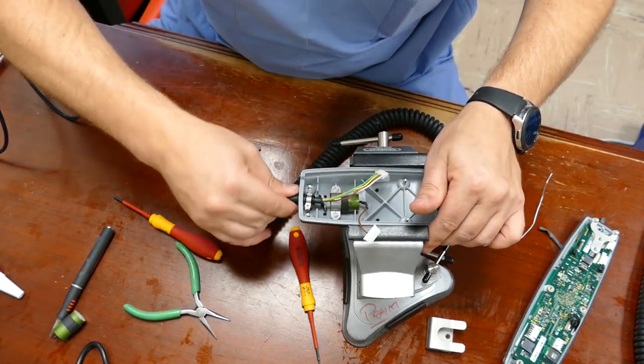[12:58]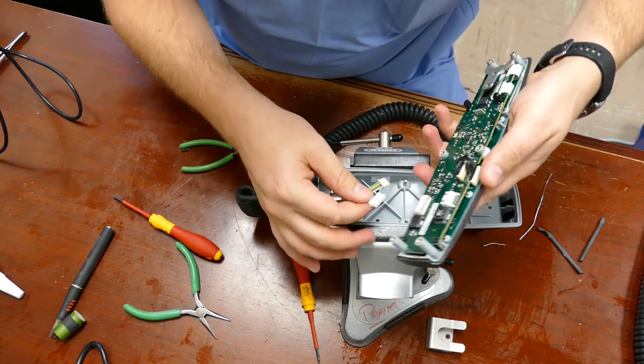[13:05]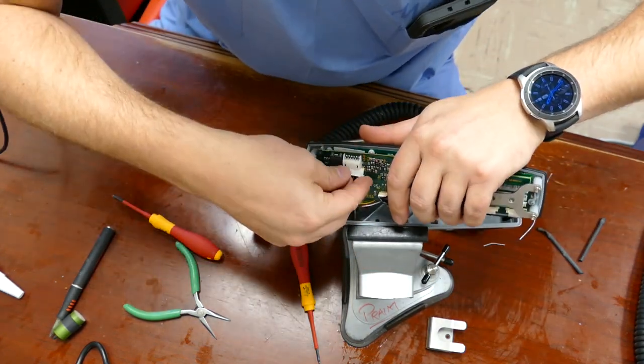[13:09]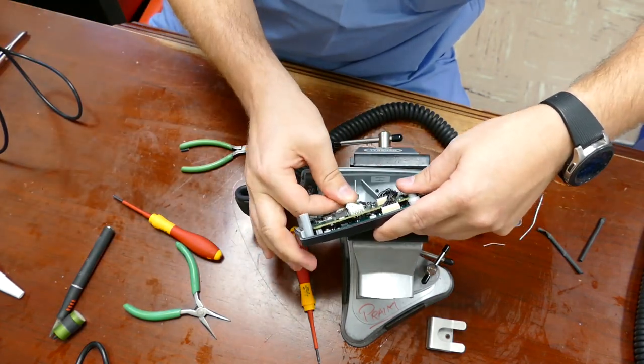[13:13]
Okay, so you can see that there's no gap here where the cord exits the hand control, and it doesn't want to spin like it was earlier. And we're ready to clamshell it back together. So first I'm going to start with the single wire large connector, and flip it back over the opposite direction. Put the 4-pin wire in.
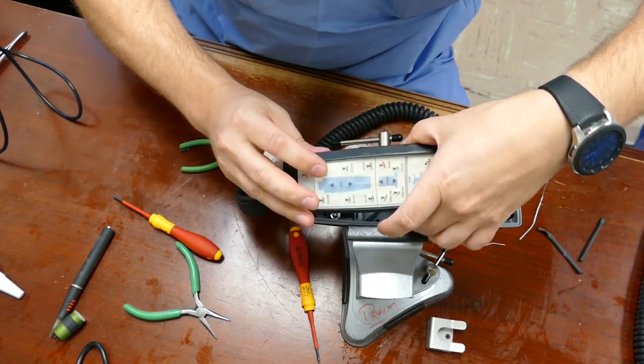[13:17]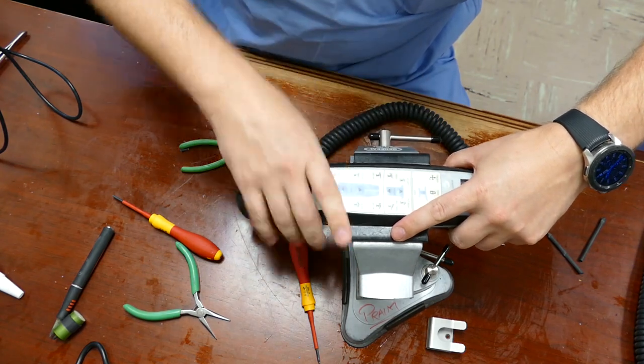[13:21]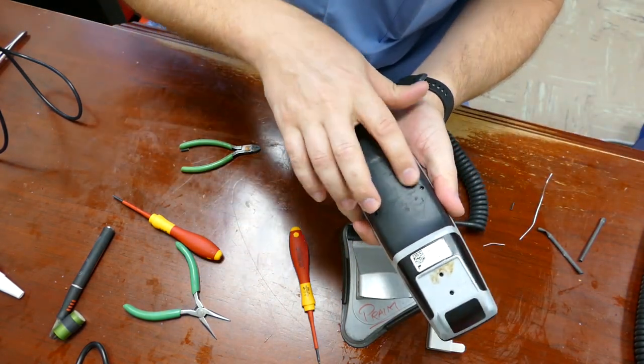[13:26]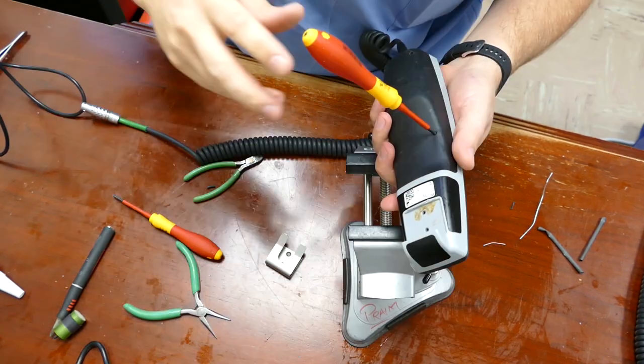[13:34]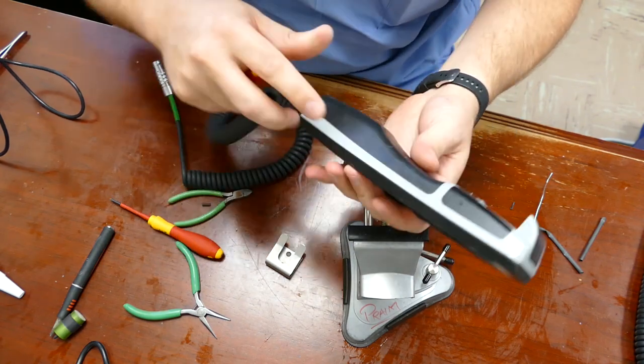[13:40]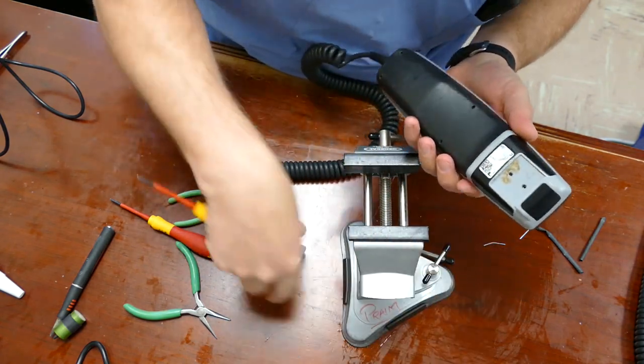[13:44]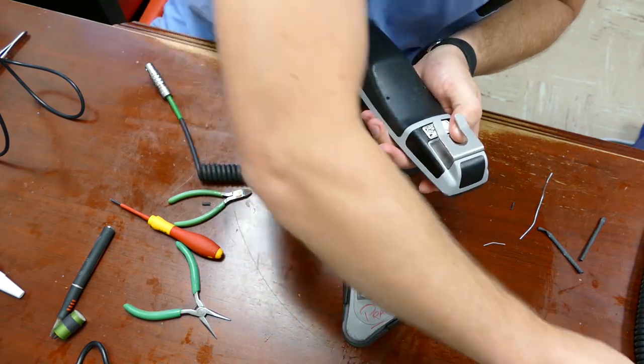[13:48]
And here is where we start with the 4 T8s on the back. And you'll have to tighten each one down just a little bit in sequence until it's all the way down. Once you've gotten all 4 of the back cover screws tightened back down and your clamshell fits nice and neat all the way around, then we're going to take the clip, fit it back on there along with its 2 screws.
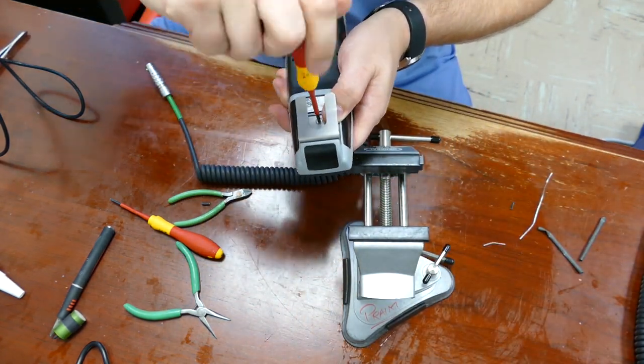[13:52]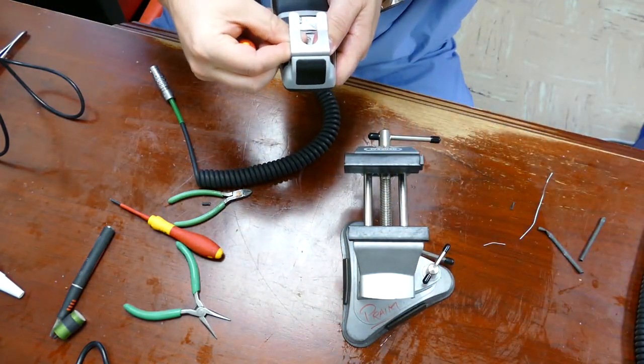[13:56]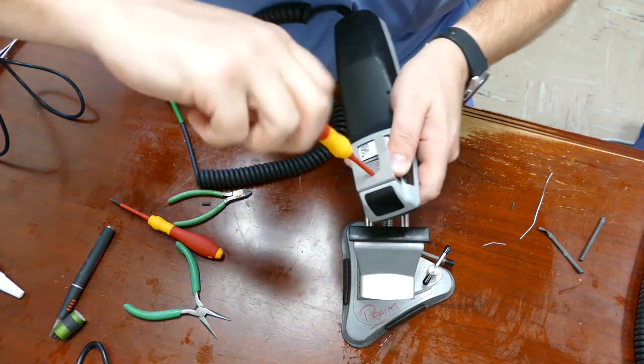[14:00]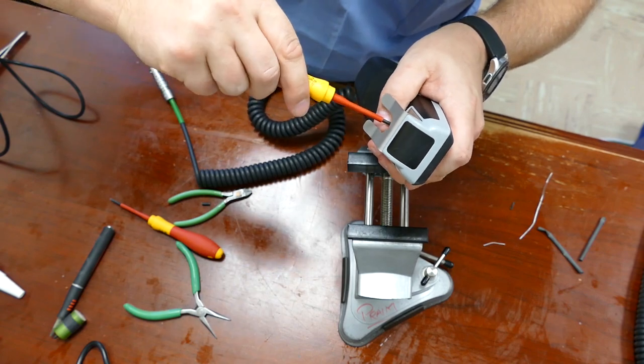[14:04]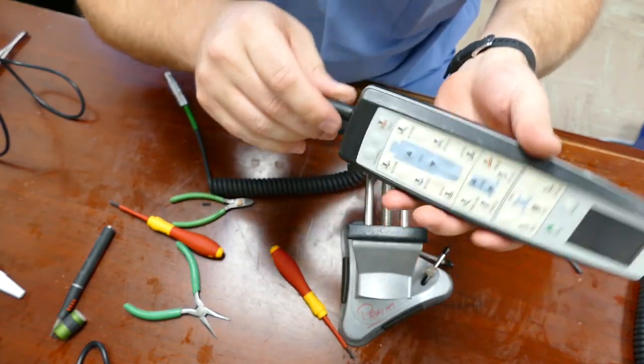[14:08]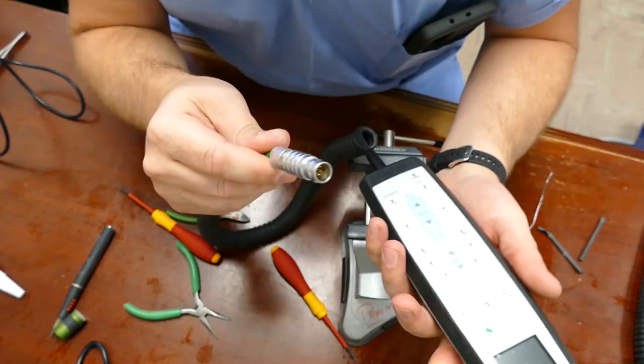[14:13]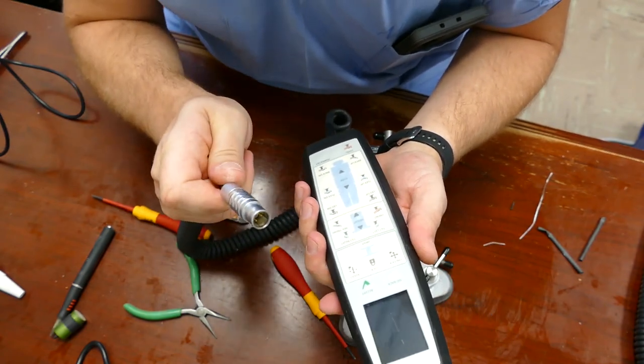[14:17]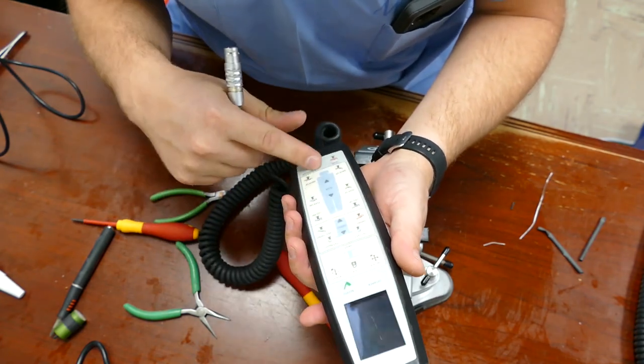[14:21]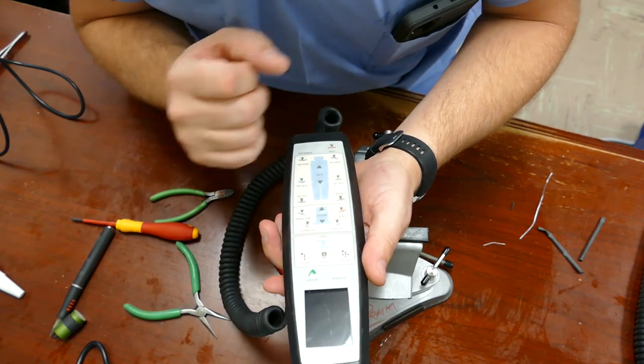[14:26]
Check the fit and finish, make sure that everything looks good. And we are now ready to go and test it out on a table. The most important step, always test your hand controls after you fix them. So we're going to test every single function on here. But the original symptom was that you have all or nothing.
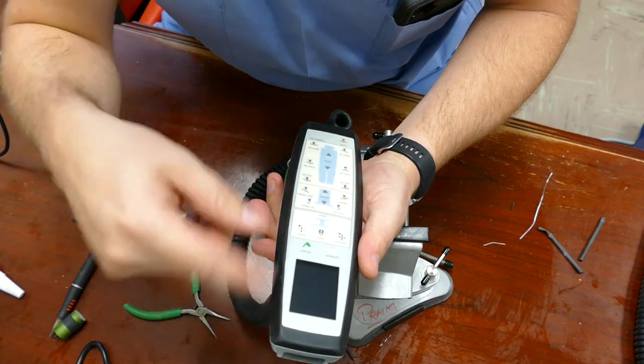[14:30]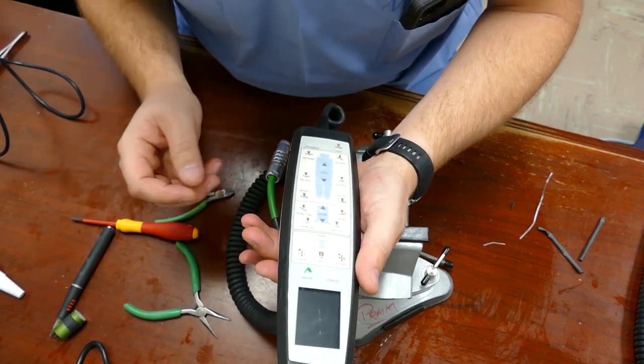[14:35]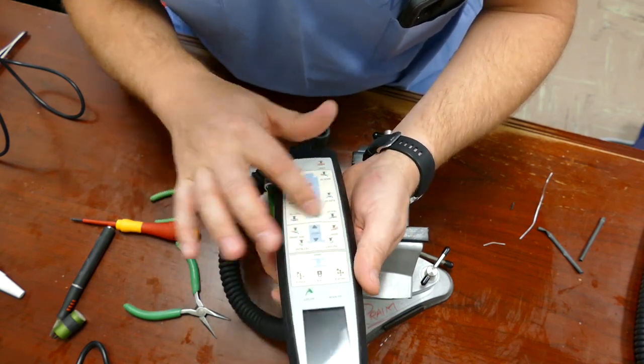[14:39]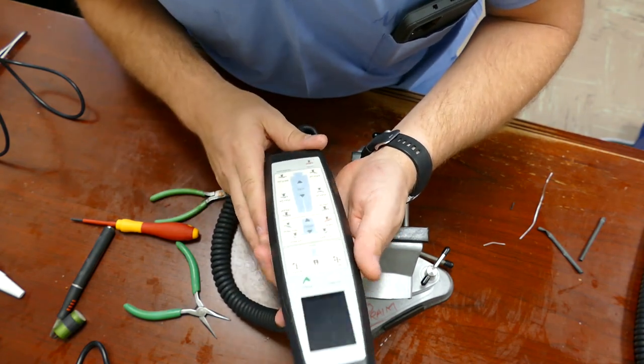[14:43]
I believe that the wire that goes in is a power wire, which powers the display and the computer that's inside it. So when that breaks at the capacitor, you lose power and you got nothing. But anyway, we're going to test every single button and check its function.